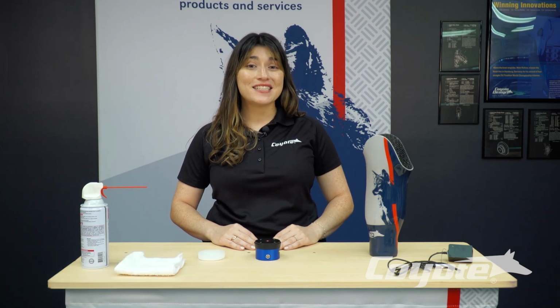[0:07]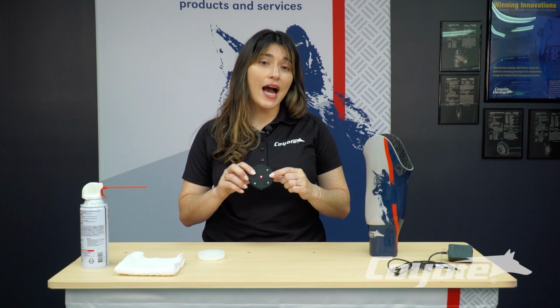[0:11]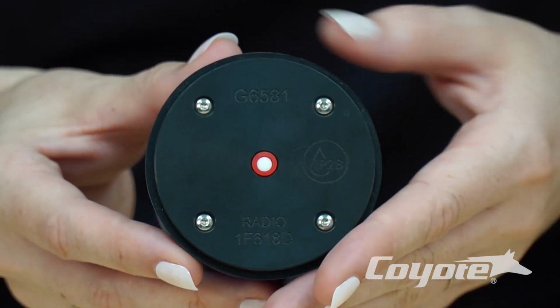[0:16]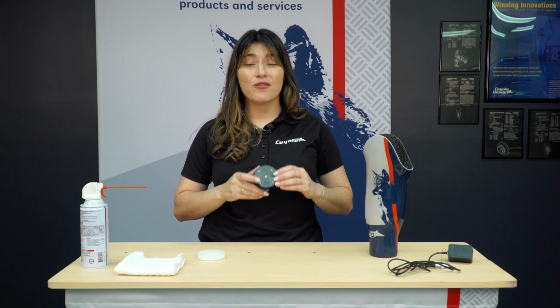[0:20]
All SmartPucks sold after July 1st, 2025 are now waterproof, rated to IP28 standards. That means if your SmartPuck has the IP engraved indicator on the face of the SmartPuck, then you know that you can submerge the SmartPuck in fresh water up to 10 feet for 4 hours. Perfect for rainy days, outdoor adventures, or accidental splashes, the SmartPuck is ready to go with you.
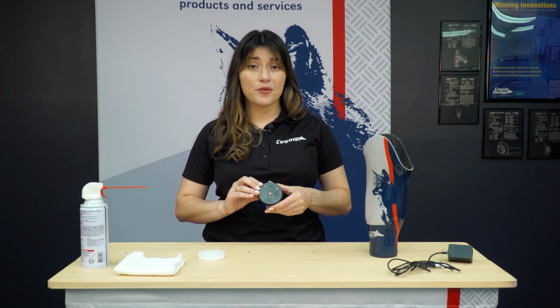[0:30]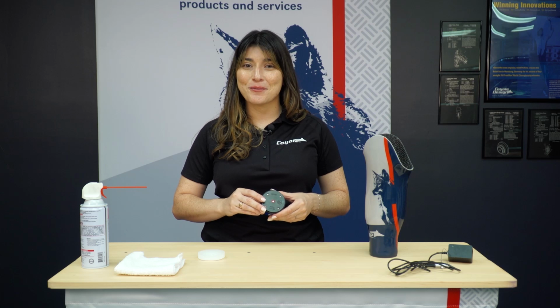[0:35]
If you have an older SmartPuck that does not have the waterproof feature yet, you can send that in to us for refurbishment. So just reach out to our team about getting yours upgraded. A few things to note: the SmartPuck charger is not waterproof. Never charge or use the charger near water. Doing so could cause serious harm and void the warranty.
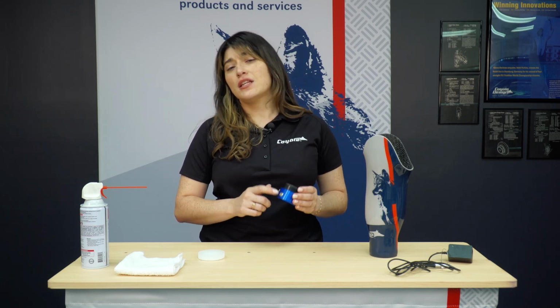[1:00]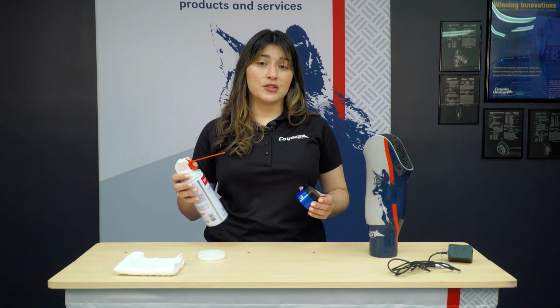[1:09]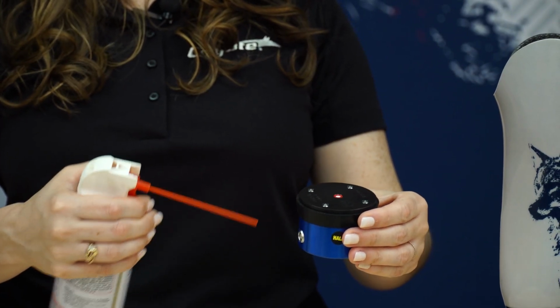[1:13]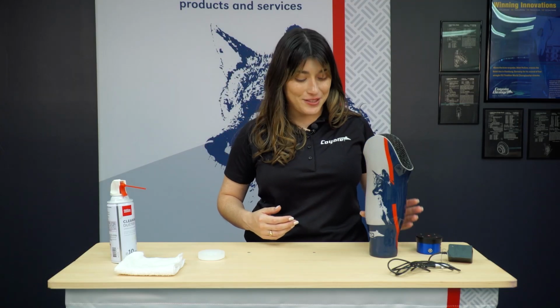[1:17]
Outdoor use or exposure to moisture should always be followed up with ensuring that your system is working properly. Check the charging port and your filter disc. One of the things that you can do to ensure continued optimal function is making sure that this charge port doesn't have any water next time you go to charge, or any debris from being in different moisture environments. One of the things you can do is take compressed air and hold it slightly away from the opening to ensure that any debris is removed. So if this was our socket, this is how I would do that.
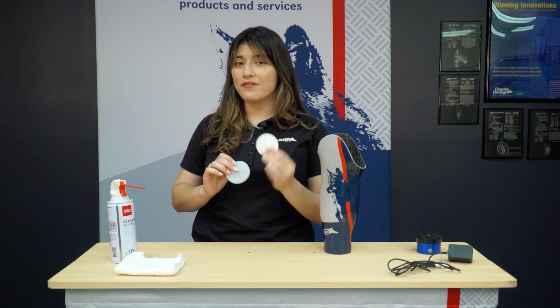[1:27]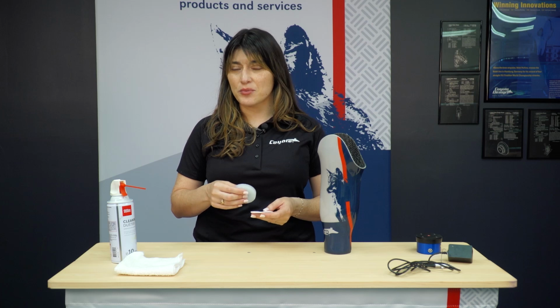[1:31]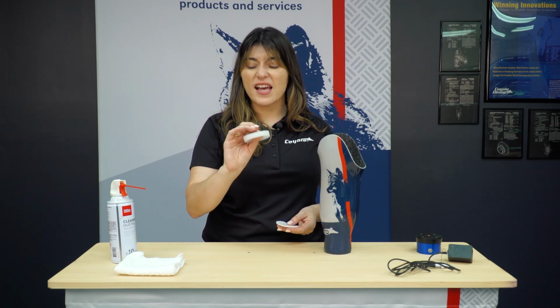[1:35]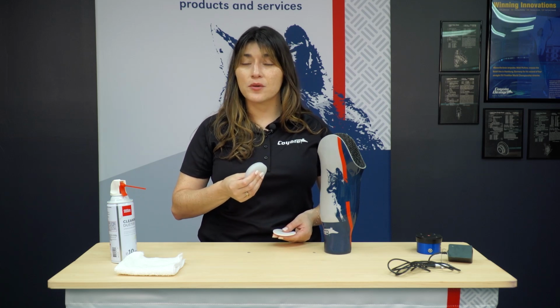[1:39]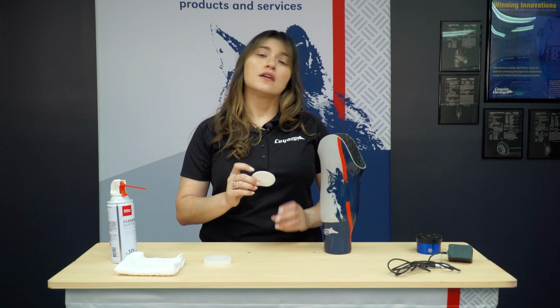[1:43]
Most of the time when you go to clean out your socket, you may have a molded distal cushion in the bottom, and then underneath that you're going to see a small white filter disc. This helps protect the SmartPuck from getting any extra debris into it. So you will pull out the distal cushion and ensure that it has any debris removed, so perhaps rinsing that or following the instructions provided by your clinician. Then you will see your white filter disc. This filter disc may be visibly soiled or have a lot of water in it potentially.
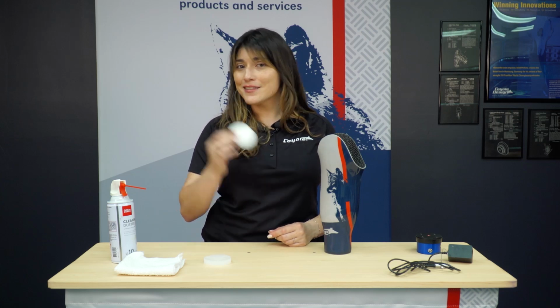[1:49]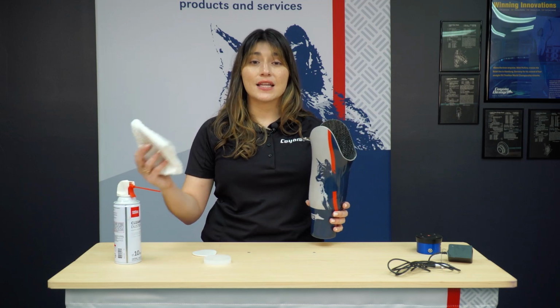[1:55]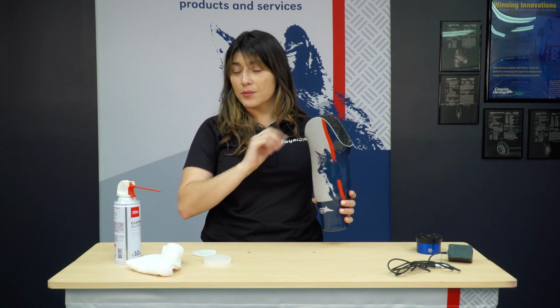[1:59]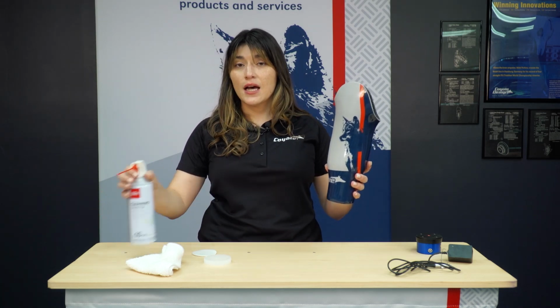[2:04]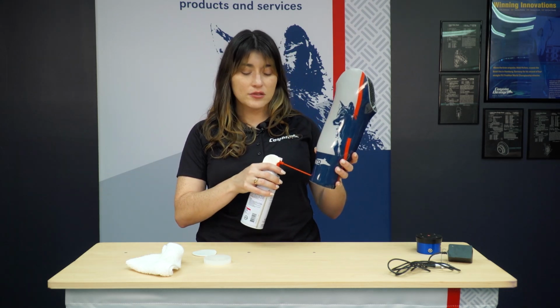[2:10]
So if it is, just remove it and install a new one once you have cleaned the rest of your socket. When you have your socket, you're going to take a clean cloth and just give it a wipe down, so you're wiping the face of your SmartPuck that's inside. And then also you can perform that same technique of spraying to ensure that air pushes out any excessive debris. Just don't place the actual nozzle all the way into the charge port.
Also, patients who experience excessive sweat can use these techniques to help ensure that their SmartPuck remains functional for years to come. Over time, sweat can cause internal corrosion of the unit, so there are a few ways to minimize this risk. One of the things we recommend is for a patient to always discuss sweat with their clinician to help assess the best ways to reduce sweat buildup in a socket.
We don't want the limb to stay very sweaty throughout the course of the day, as this could irritate the skin. So we definitely recommend taking off your prosthesis and drying your residual limb throughout the course of the day if you do experience significant sweat. This will help keep the skin more healthy and help preserve the functionality of the SmartPuck. But definitely discuss any of these sweating techniques with your clinician. The SmartPuck can be refurbished by Coyote in cases of extreme perspiration, which we recommend doing yearly.
The SmartPuck is easy to fabricate, and the drop-in design is very simple and straightforward, which helps reduce fabrication concerns. We have very consistent vacuum levels, and the patient can monitor these with the Smart app. We're able to troubleshoot in real time and adjust these settings perfectly for the patient to ensure that we have excellent vacuum support. For a dependable, waterproof vacuum system that's simple to use and fabricate, SmartPuck is ready for wherever you are.